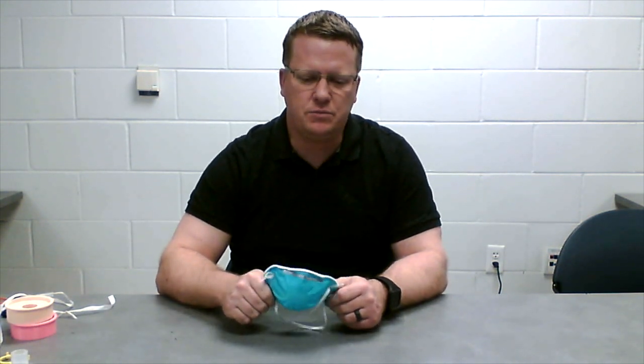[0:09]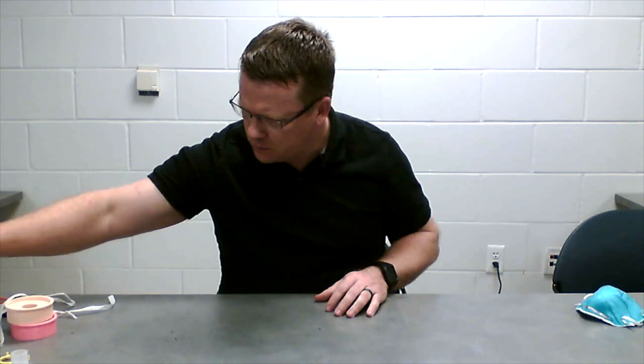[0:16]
We developed an alternative solution to the N95 mask that we think is fairly easy to produce. I wanted to share that with you. This provides equivalent filtration and can also meet or pass the fit test.
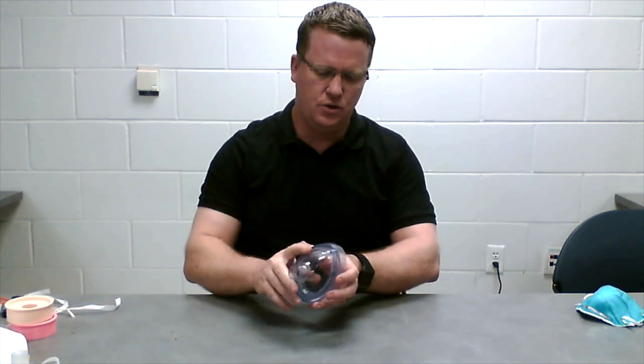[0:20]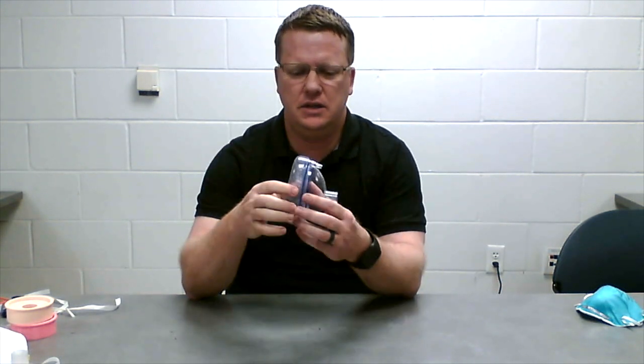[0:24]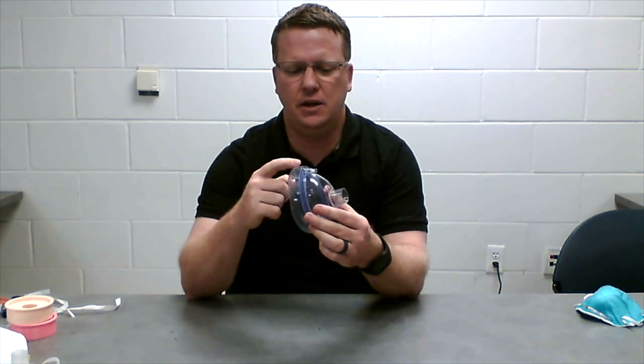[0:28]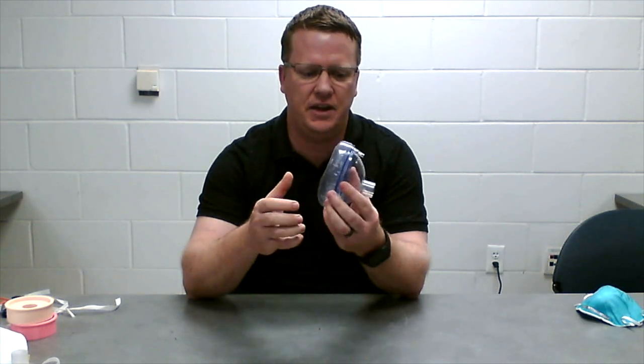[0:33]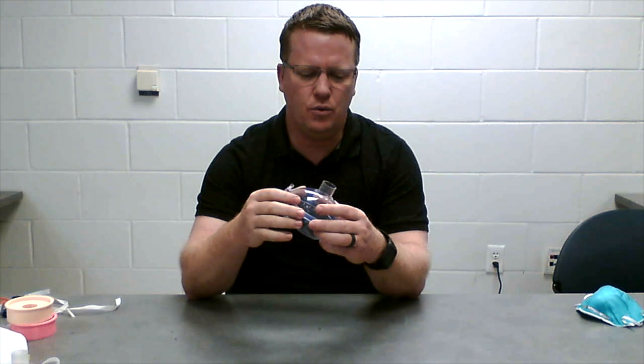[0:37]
We're going to be starting with basically your standard anesthesia mask or BVM mask. This has a form-fitting pillow on the backside that fits to a variety of sizes and shapes of faces. These come in different sizes as well, so be aware of that. On the front is a port.
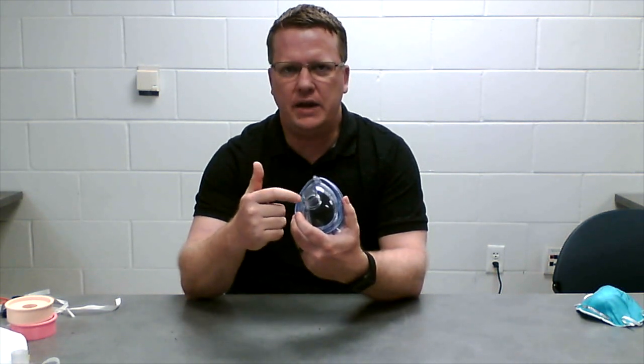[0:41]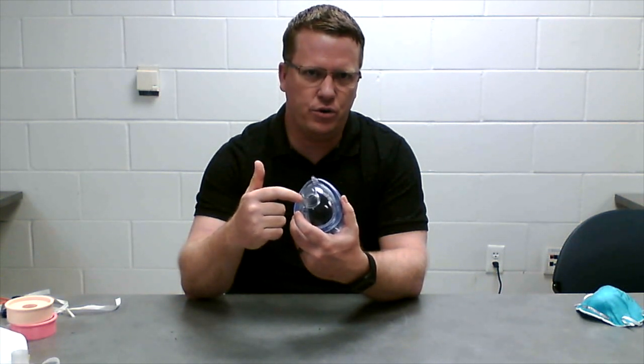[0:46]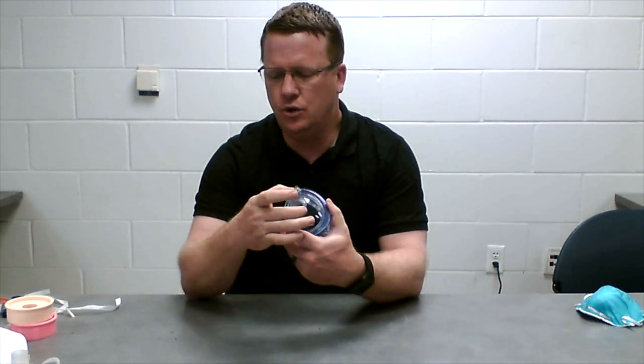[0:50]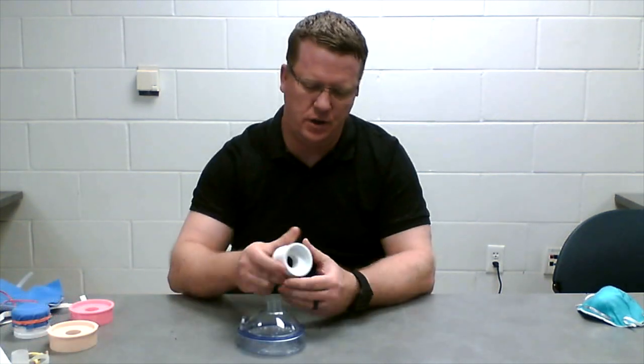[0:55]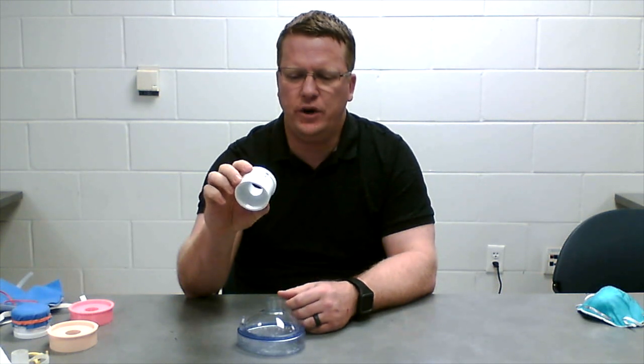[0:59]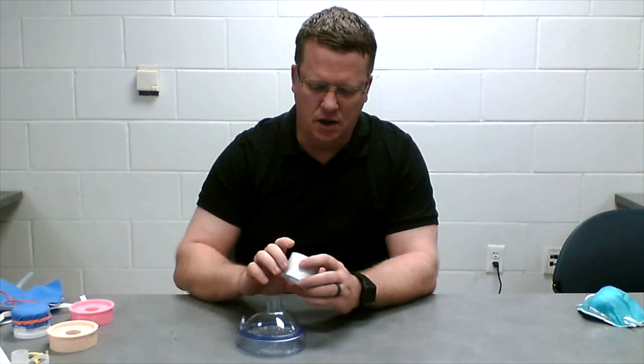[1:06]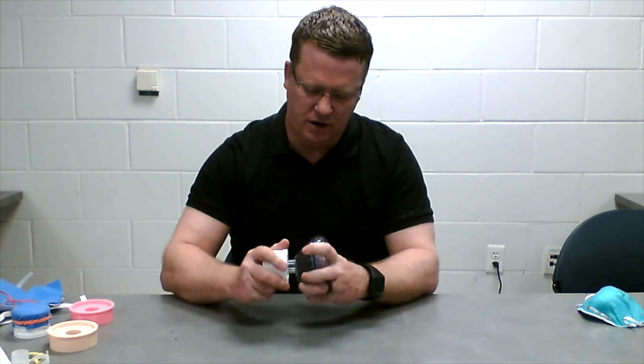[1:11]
This port, the outer diameter, is the same as a 3/4 inch Schedule 40 PVC pipe. So we can use standard PVC fittings to attach to the front of the mask. We started out using a standard 3/4 inch to 2 inch Schedule 40 PVC bushing. This can be obtained at any hardware store in the PVC section, and costs less than $2. This basically fits right on here due to the similar diameters.
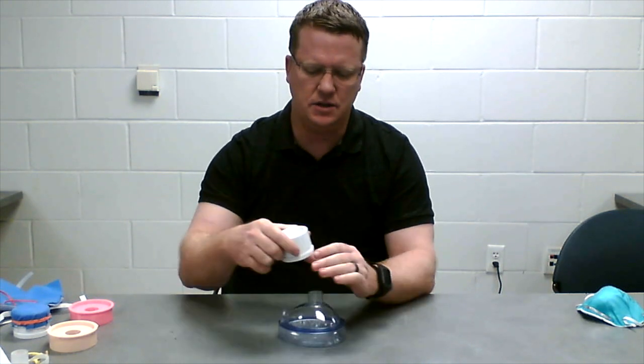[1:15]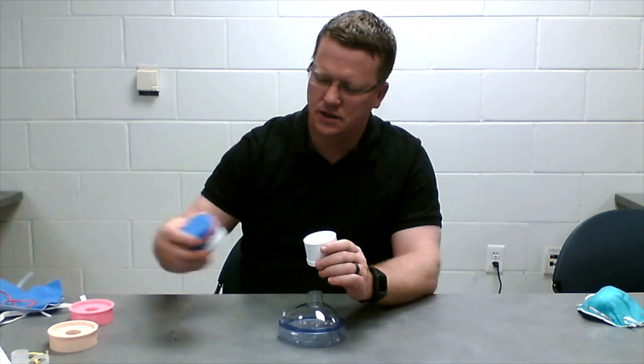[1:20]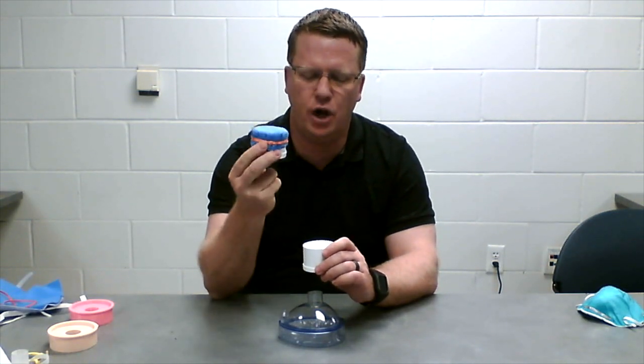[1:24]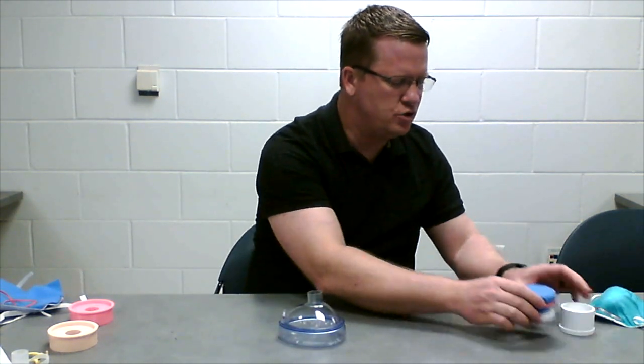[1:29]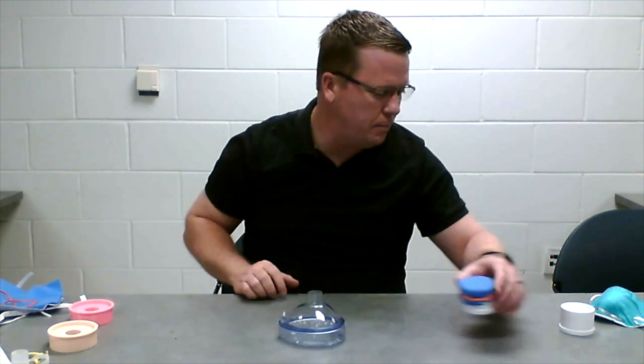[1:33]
And then we can essentially attach a filter fabric to the end of this using just rubber bands, which seals that material around the edge so we don't have any flow around the edge. We found that this was maybe a little bit small, a little bit restrictive. The cross-sectional area here is about 3 square inches. That may not be enough for filter material.
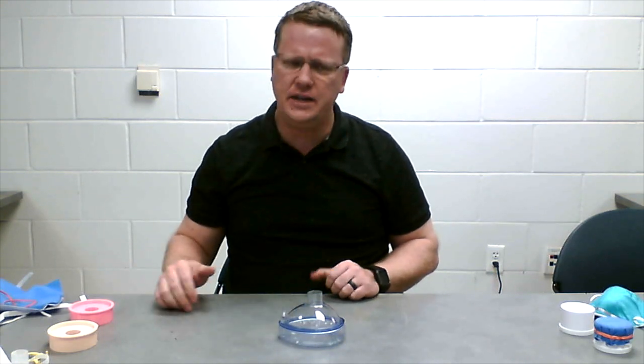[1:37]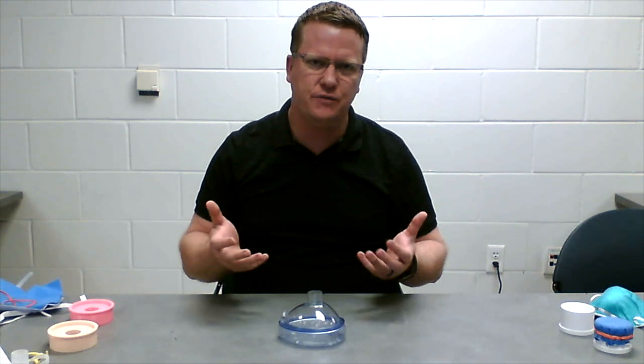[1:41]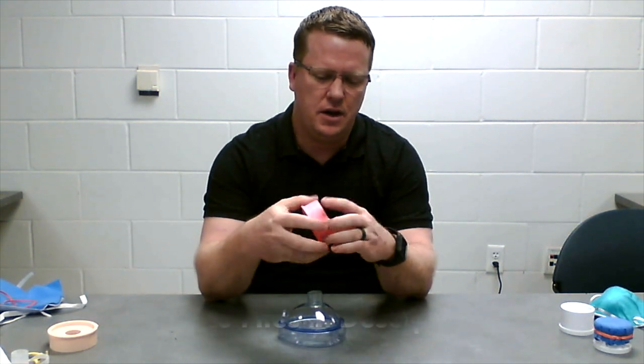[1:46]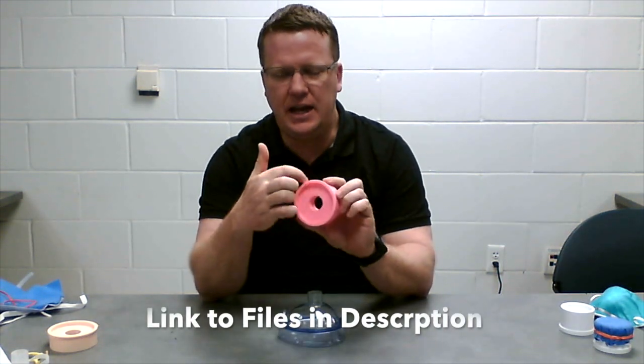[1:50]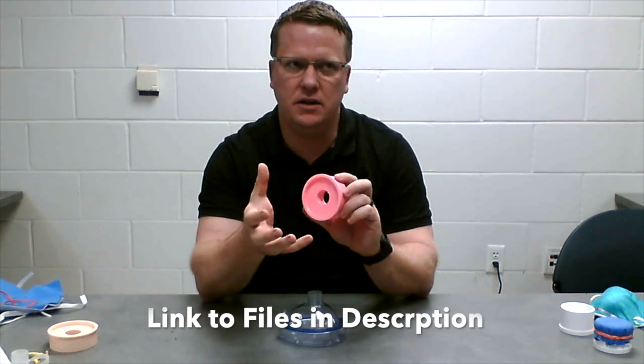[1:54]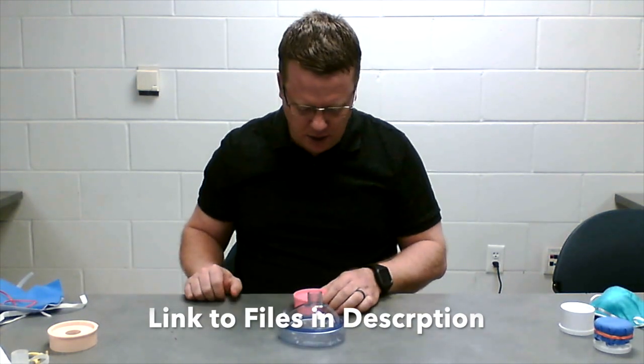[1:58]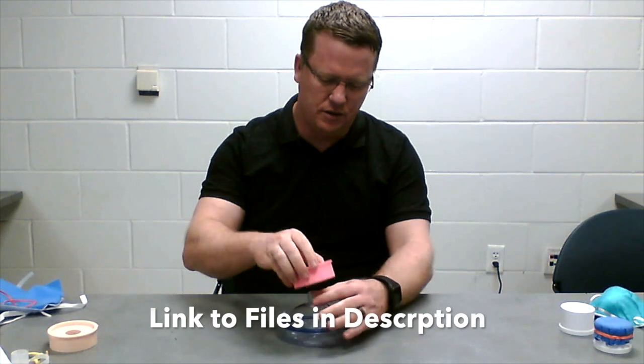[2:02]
So we designed a 3D printed part that increased our surface area. You can see here we have an example of the part. We essentially expanded the outer diameter from about 2 inches to about 2.8 inches, giving us about 6.3 square inches of surface area. We have the same internal diameter so that it fits onto the BVM mask.
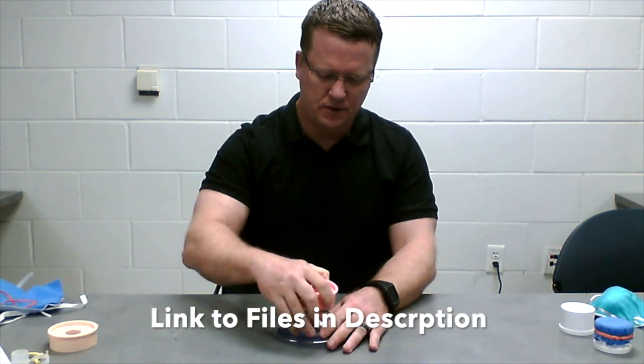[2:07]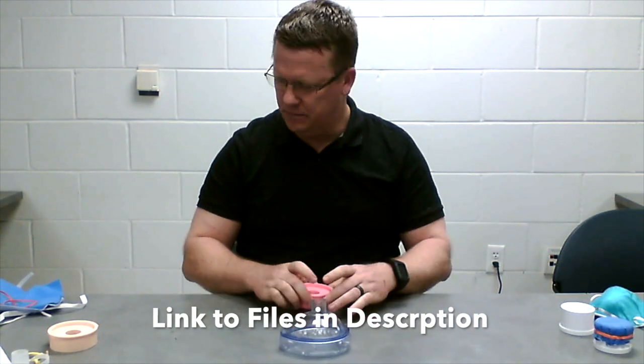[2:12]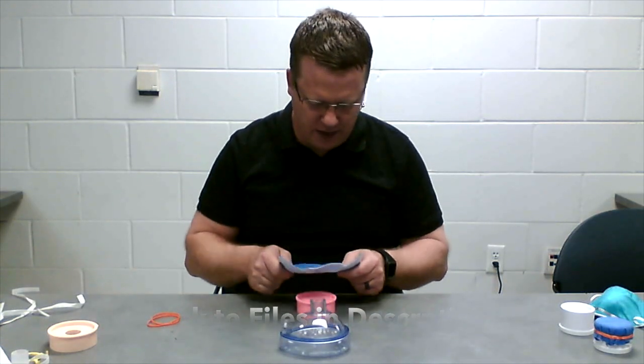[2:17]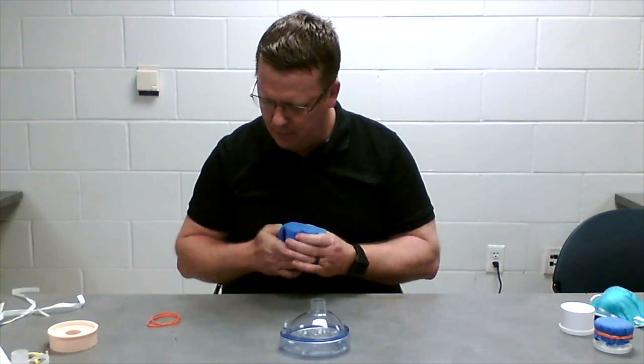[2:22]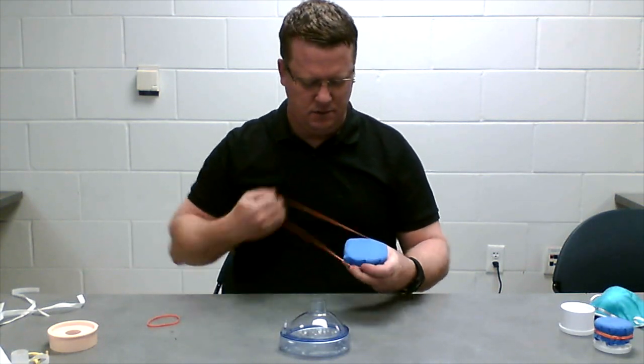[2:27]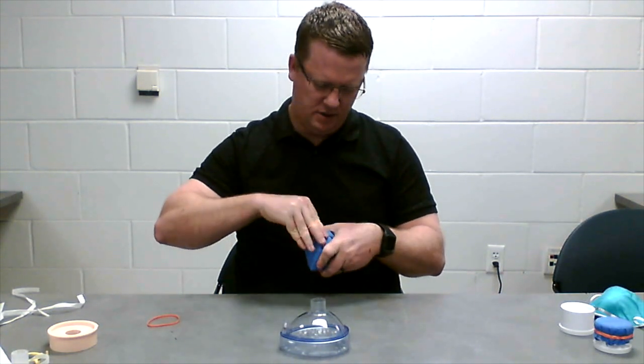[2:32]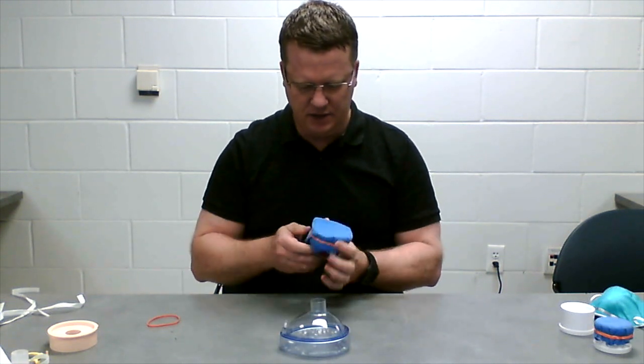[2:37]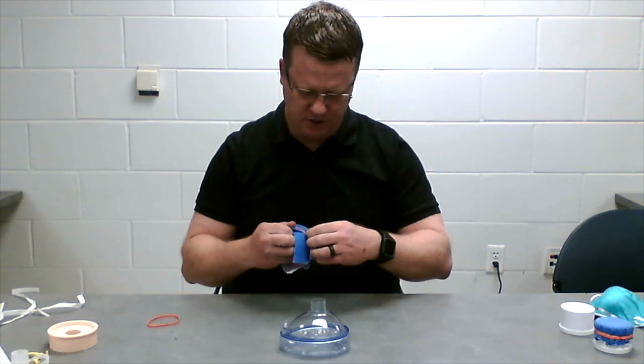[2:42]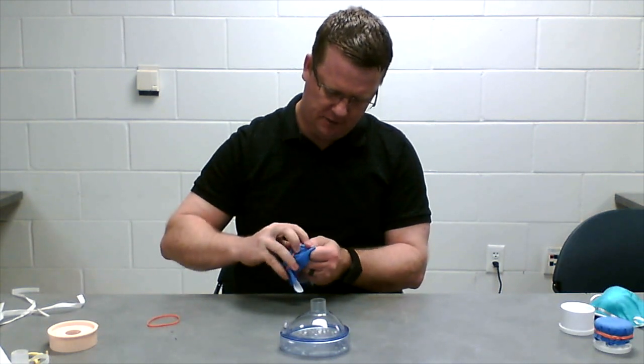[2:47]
We can attach the material. In this case, we're going to be using the Halyard H600, 2 layers of that. This is commonly referred to as surgical wrap or sterile wrap. We're just going to pull that material over it, wrap a couple rubber bands around here and then pull it tight, making sure that the material goes around the lip that extends around the edge of the part. Pull it up snug, and just pull that material down tight.
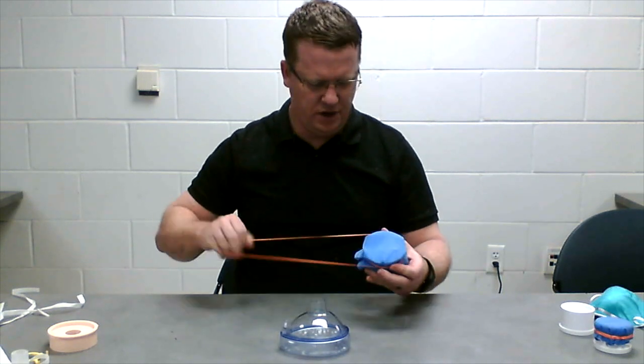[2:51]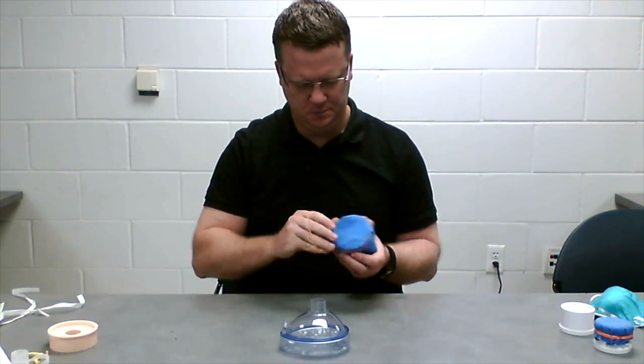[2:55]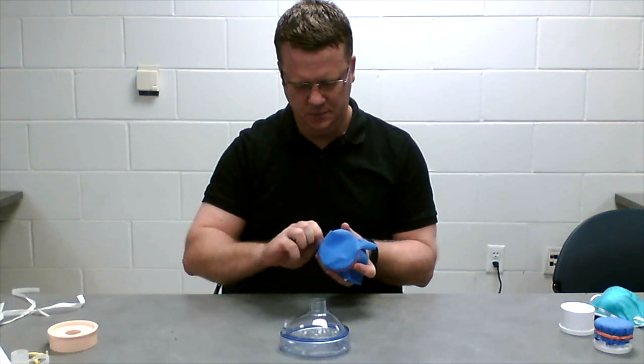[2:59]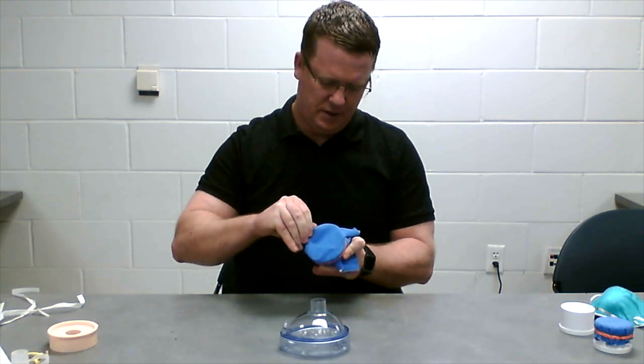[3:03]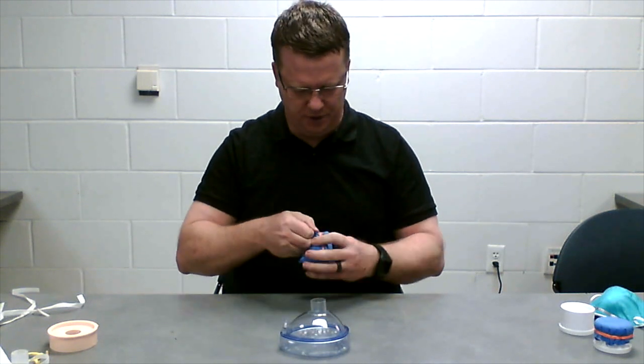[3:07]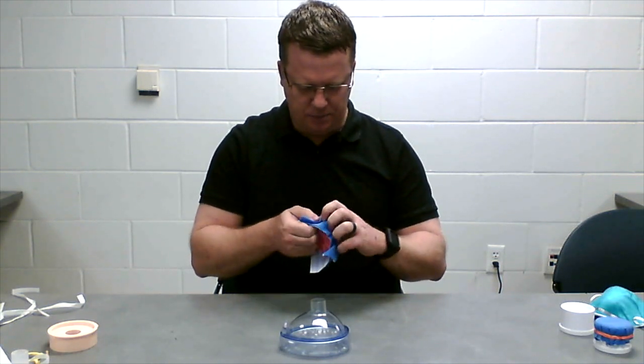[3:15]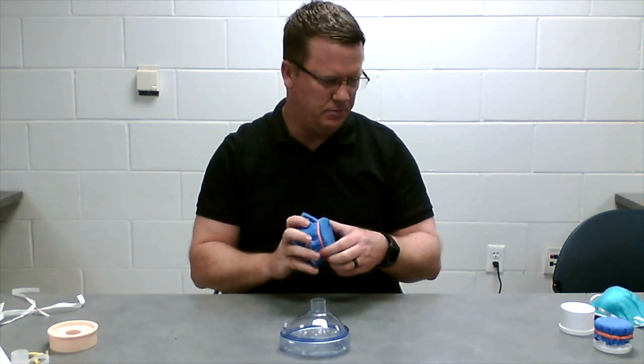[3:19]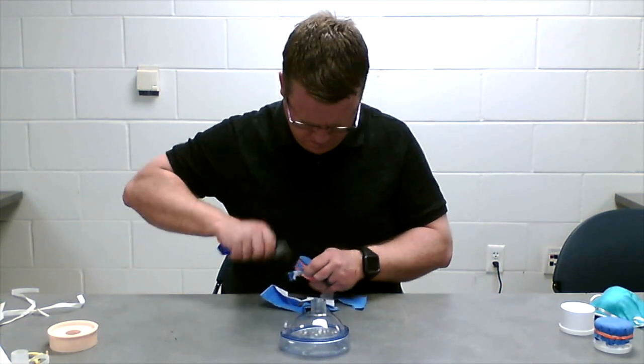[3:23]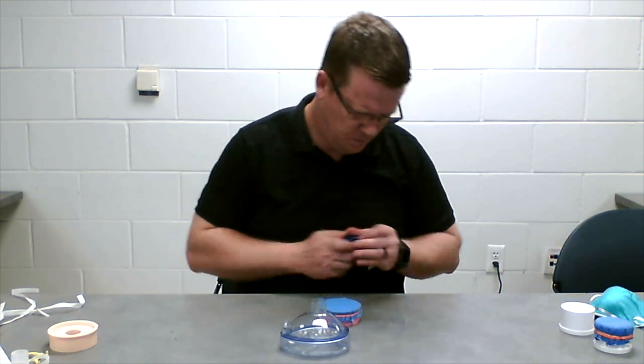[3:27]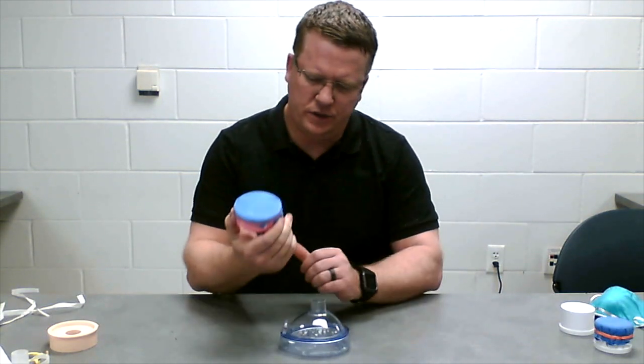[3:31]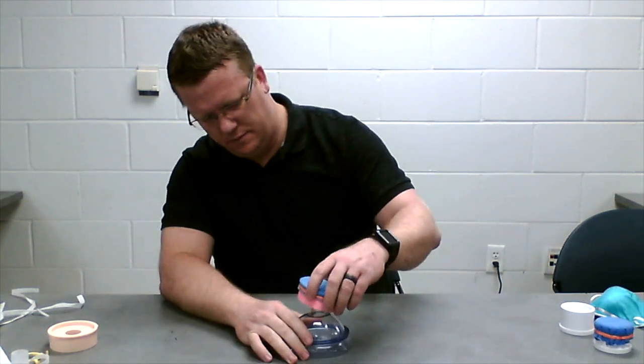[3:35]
Put a second one on here. And just make sure those rubber bands are pulled up tight to that lip so that it really holds that material snug. And pull the material down tightly onto the end of the part there. We can then just take a pair of scissors or a razor blade and trim that up to clean it up some. Fairly quickly trim that up and we have a nice clean filter that can go on there.
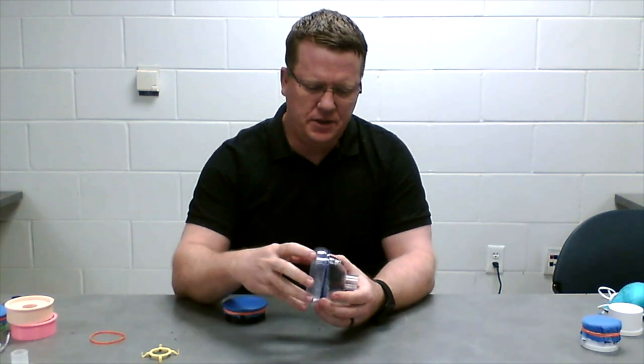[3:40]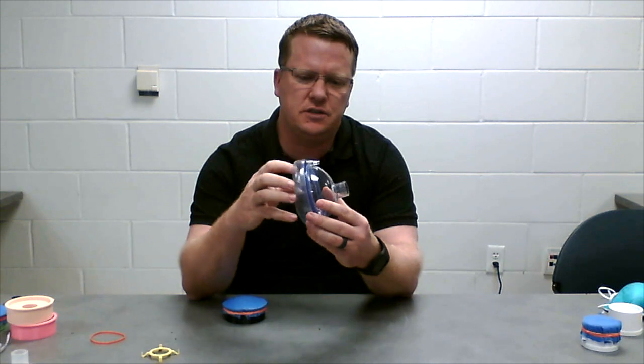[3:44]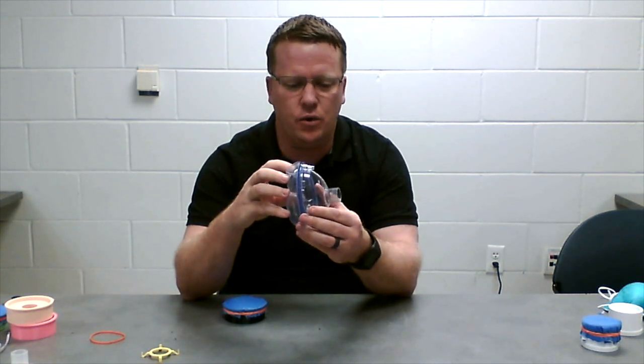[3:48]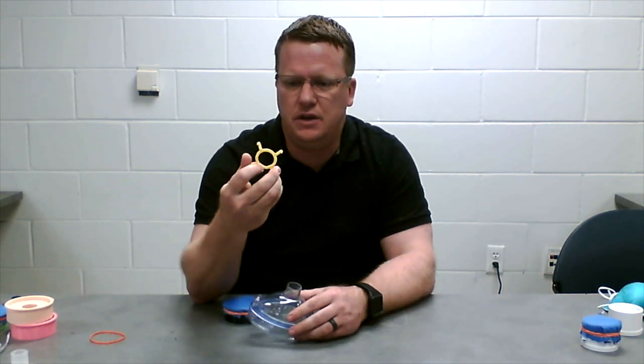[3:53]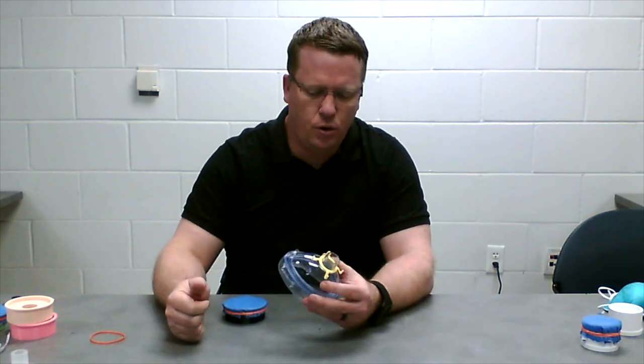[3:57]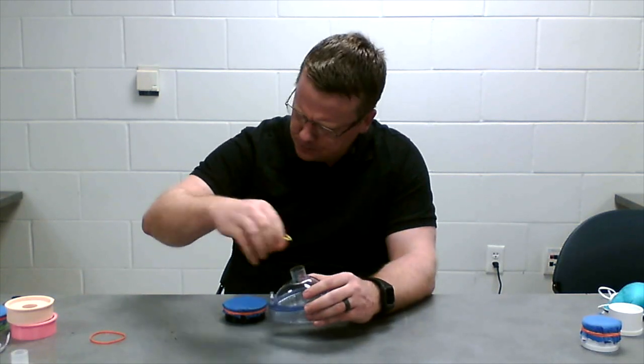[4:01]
Now, to attach this to the face, a couple of things to keep in mind. The BVM mask has a pillow here. You can adjust the pressure to improve the fit, either reducing the air or increasing the air. They can come with these clips or these octopus straps that go over the port. If you have elastic straps, that can help to tie it to the back of the head.
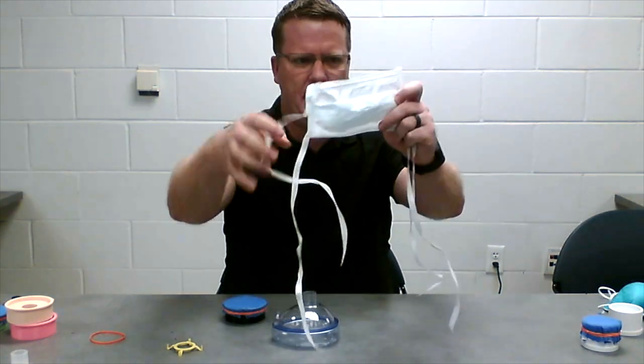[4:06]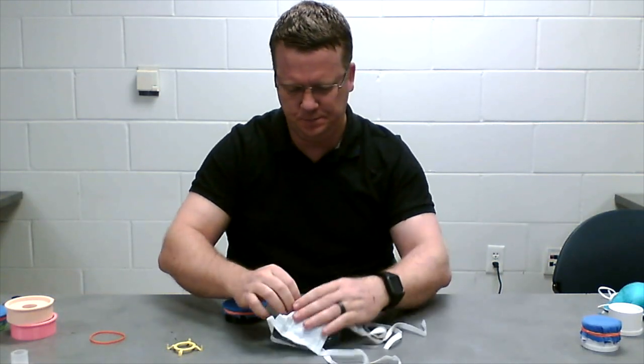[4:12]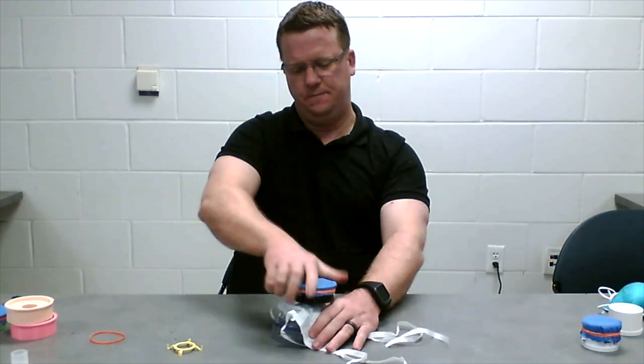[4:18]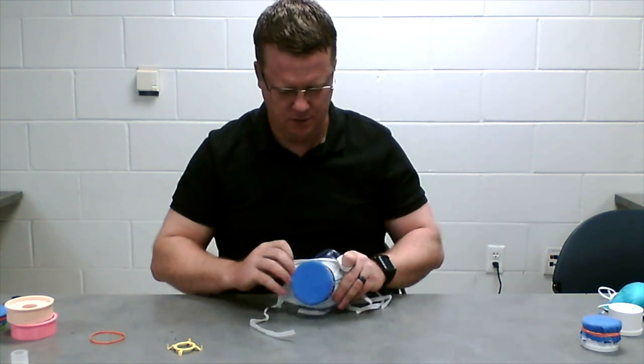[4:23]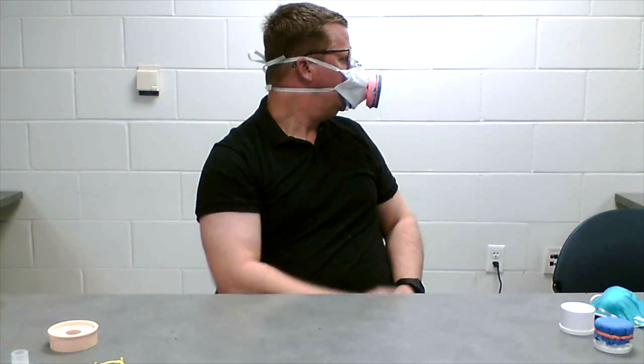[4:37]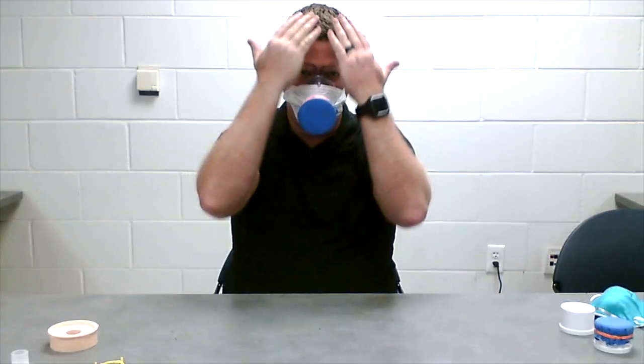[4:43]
Otherwise, what we can also do is take a general typical mask, cut a hole in the center of that, and put that over the port. Then put the filter on there and get it all the way down to the mask. So you can see the mask is now attached to my face. It's sort of a low profile, it's not obstructing my vision. And I can wear this with a shield.
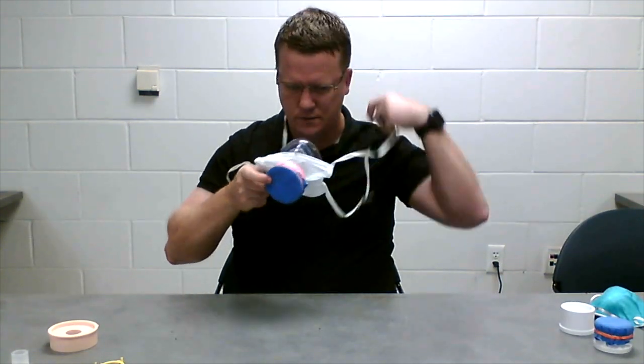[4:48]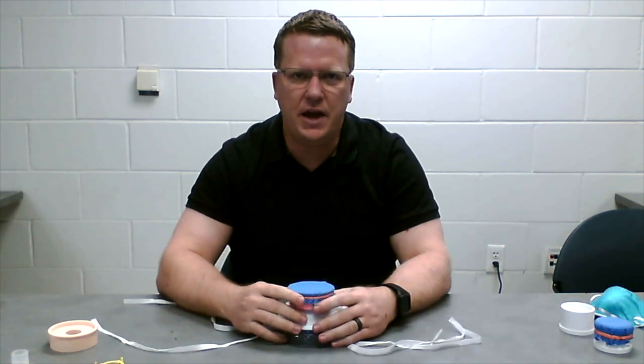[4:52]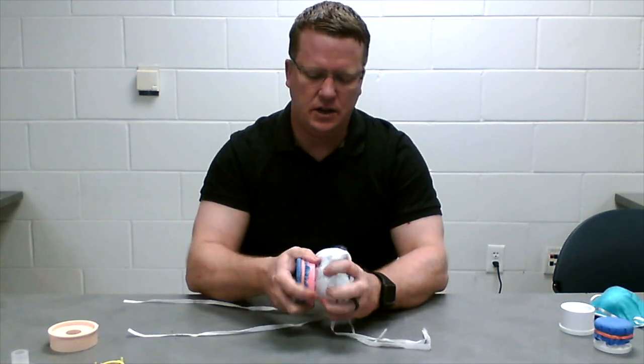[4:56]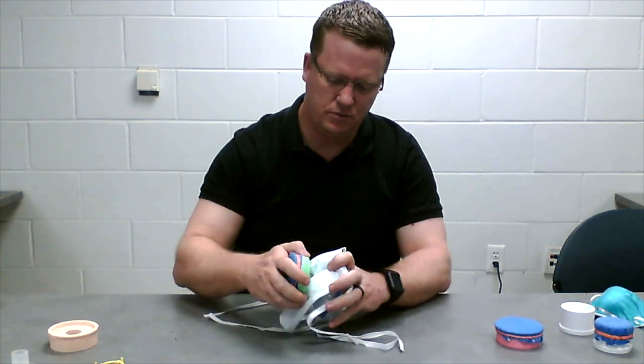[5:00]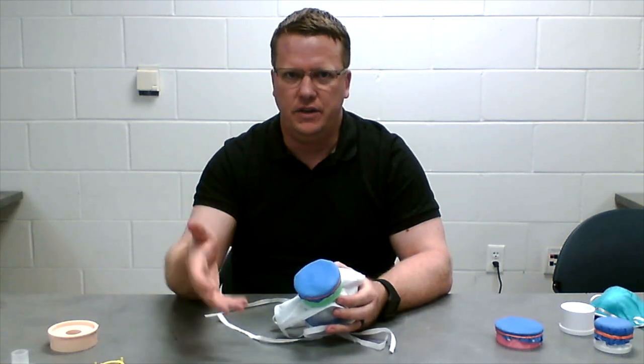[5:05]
This is intended to be worn with a shield in front of the mask to protect it from getting contaminated. If it does get contaminated though, it can quickly be swapped out for a pre-made filter that's ready to go as well, just like that, or the material can be changed out if that material gets contaminated and be reused.
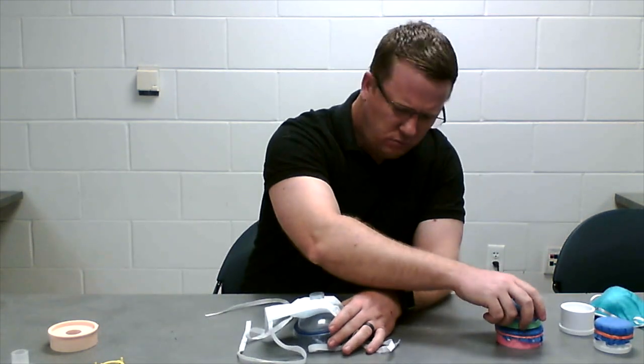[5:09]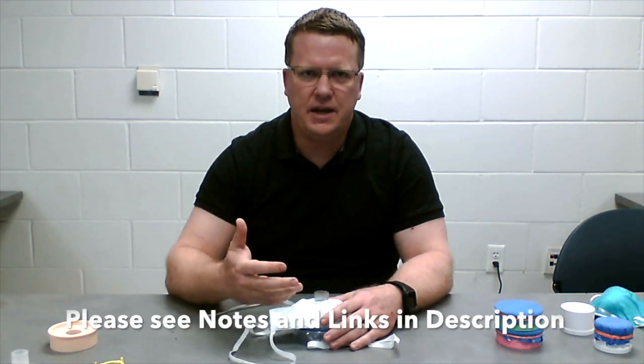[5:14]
We do recommend that if you make your own one of these masks, that you do get an N95 fit tested at your institution to meet whatever standards are there at your facility.